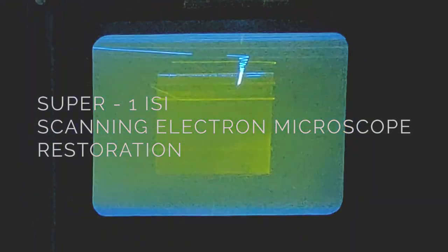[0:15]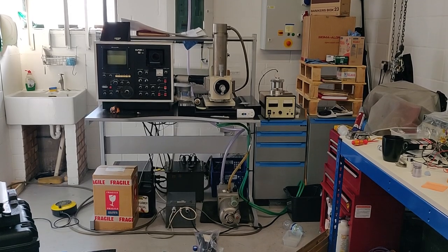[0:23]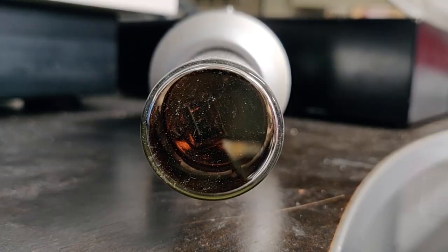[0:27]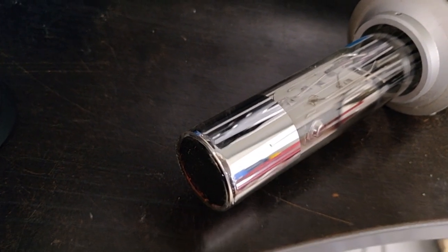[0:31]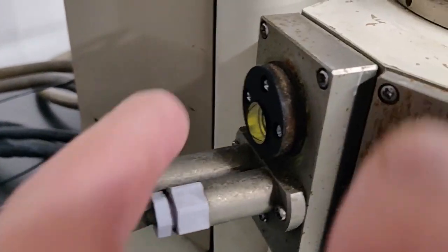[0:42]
I'm just looking at the photomultiplier tube here. This is the photomultiplier tube without the protective aluminium tube around it. This will screw onto the scintillator crystal, which is here, which passes into the vacuum chamber.
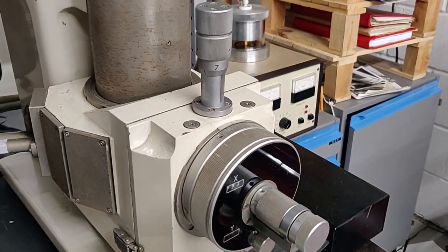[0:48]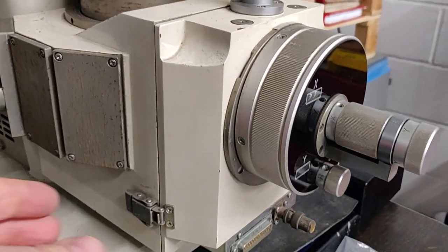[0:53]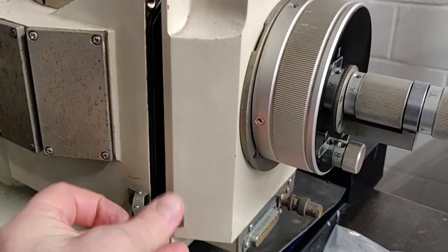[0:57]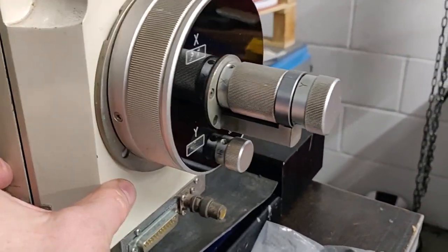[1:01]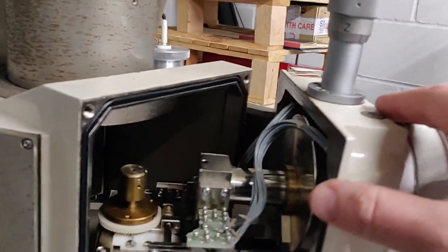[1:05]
So I'm just going to take a quick look at the XY stage while I'm here. I don't want to open this up too many times when I'm still a few days from being able to put it back under vacuum. But having released the vacuum on the chamber, it's quite nice to have a look inside. It's a lovely piece of kit.
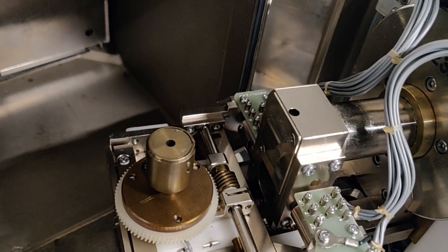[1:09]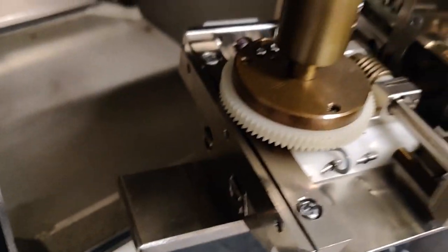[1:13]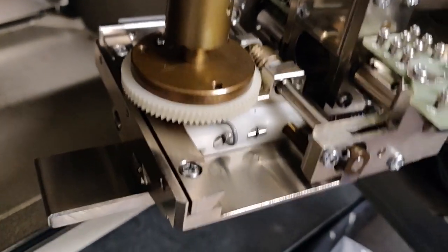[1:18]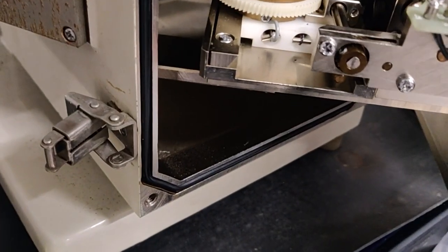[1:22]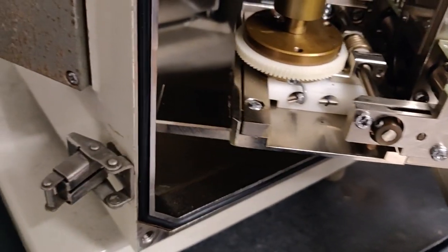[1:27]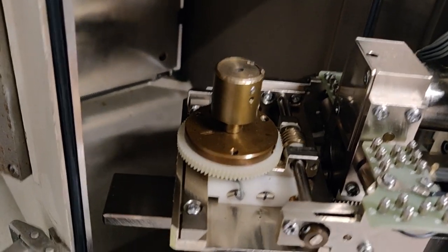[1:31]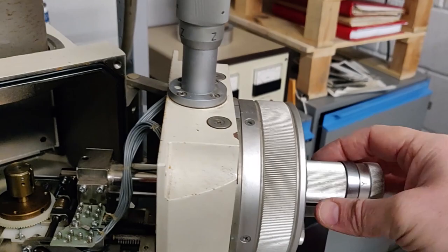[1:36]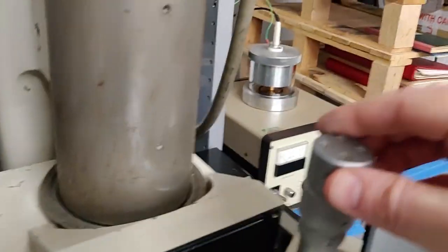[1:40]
So we've got the Y stage here. You can see that it's turning and that's raising the table. That's the X stage, so it should be moving it lengthways along the table. This is tilt. And then that's the Z-axis, the worm gear, I believe. X, tilt, and Z.
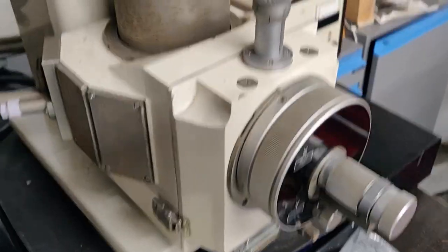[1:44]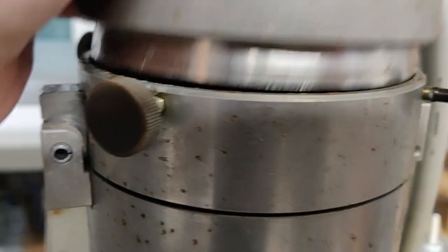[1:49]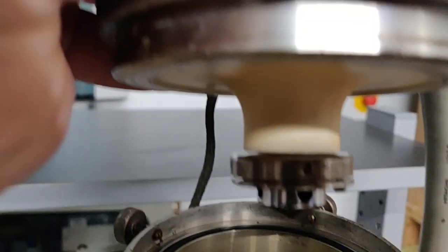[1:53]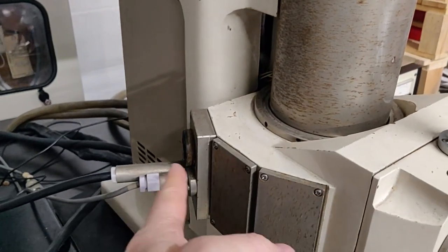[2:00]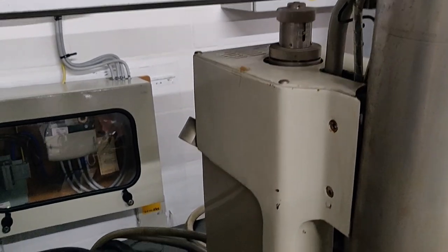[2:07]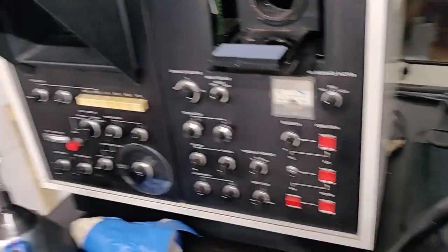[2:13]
And I just want to show the electron gun. So here is the electron gun. That sits in the vacuum, down the barrel, to the sample, scintillator, photomultiplier tube. This is the whole kit for the scanning electron microscope. The rest is just electronics.
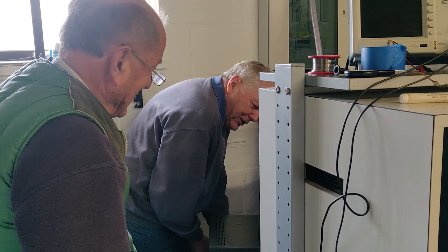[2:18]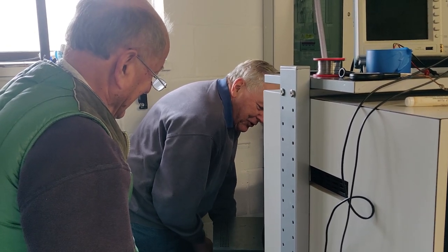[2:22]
There are some characters around it. It runs a Honda S2000 as his other little car. And I think his wife's got a Fiesta or something.
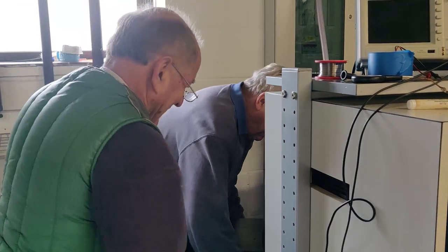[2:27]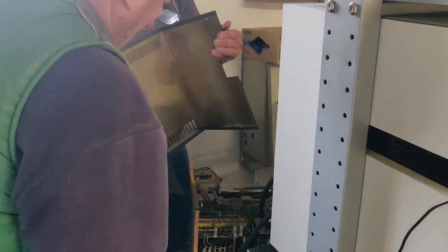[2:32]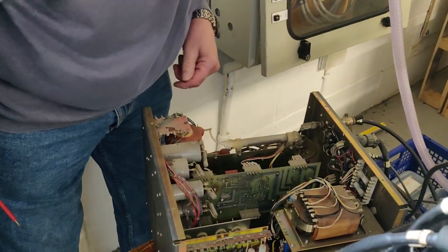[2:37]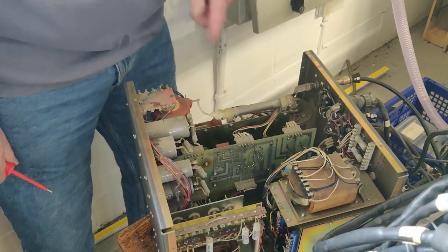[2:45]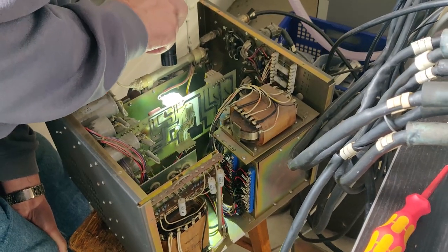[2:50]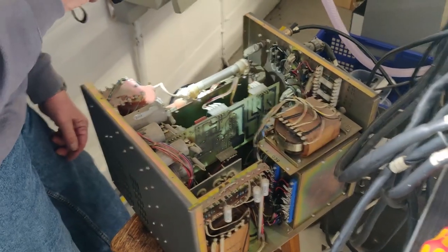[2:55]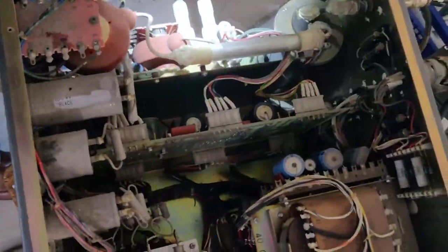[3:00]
Oh, there we go. Oh, look, real engineering now. Oh my goodness, we're really cooking on gas now, chaps. Oh my goodness, look at that board. And I bet it's this board here that we need to get into, because one socket's called J71 and it's got five wires going to it, and that looks as though it could be scintillator supplies, no, I think it's CRT supplies.
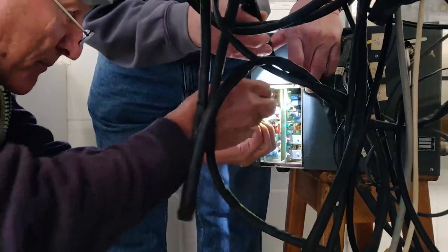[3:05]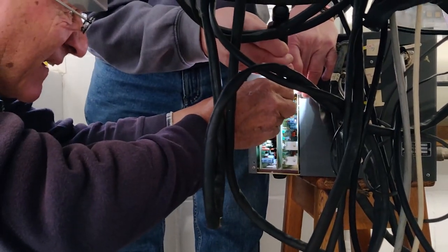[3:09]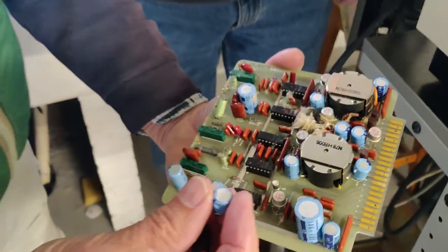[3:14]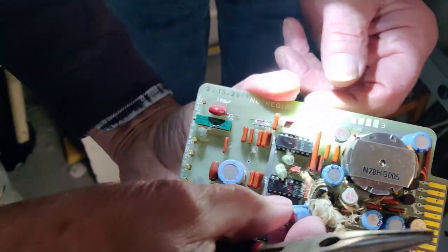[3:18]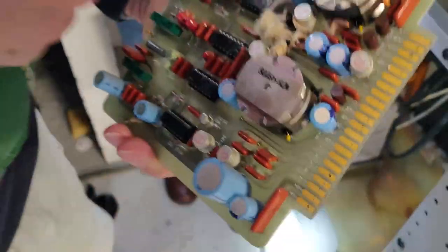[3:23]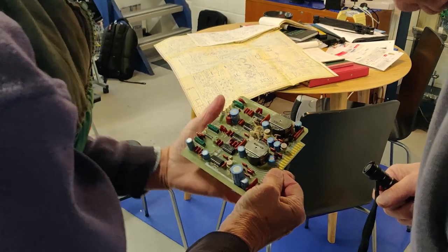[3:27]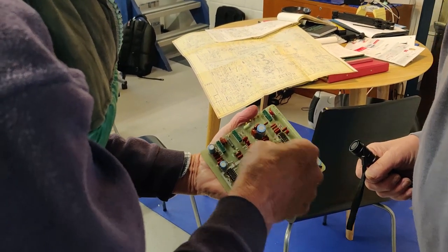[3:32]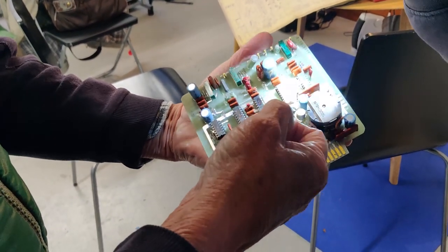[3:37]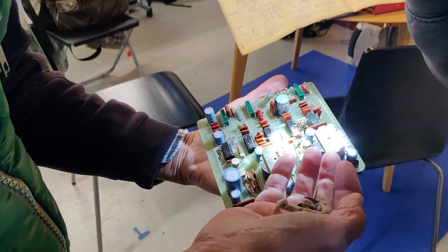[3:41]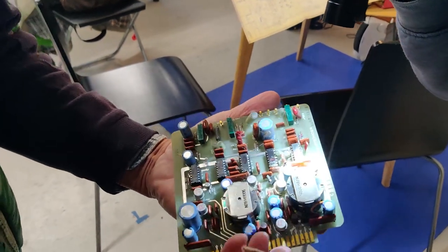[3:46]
Good news. So what's just happened there? This just fell out as I... Yeah, I think it's the top of the capacitor that fell off. Oh, I'll bet. Is this HC8 the one we're on? Yay! Wonderful. Look at that. I wondered if it might be a cap. I've never seen one like this. Is the electrolyte dried then? It's probably depolarised and then just gone short circuit. Yeah, bang. Wow, well, wash your hands before you have a cookie. Pop that in the bin, I guess.
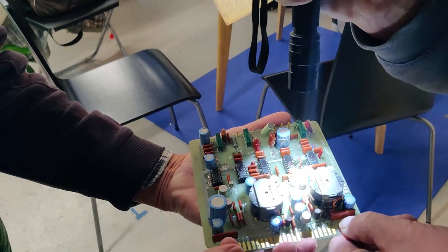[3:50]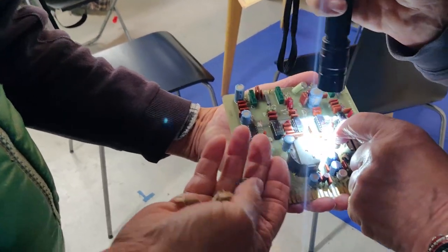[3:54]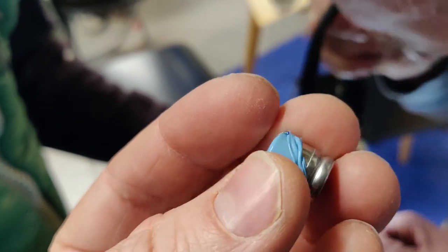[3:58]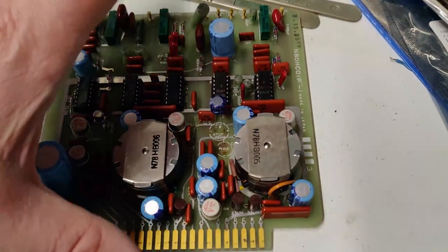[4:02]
Right. I'm just trying to work out, get a circuit ID on it. Well, I've certainly got 100, is it 100 microfarad? What does it say on the side? I think that's just a wire. While you're testing the transistor, I'm going to fit the new capacitors. That's good?
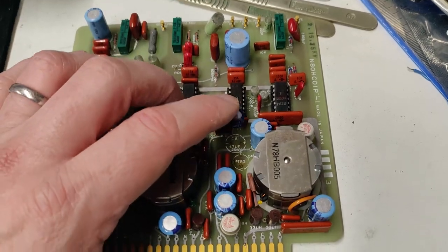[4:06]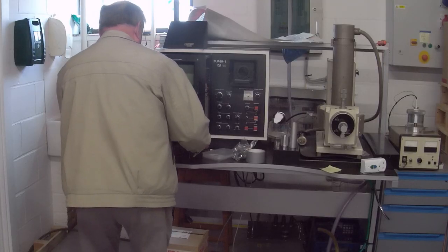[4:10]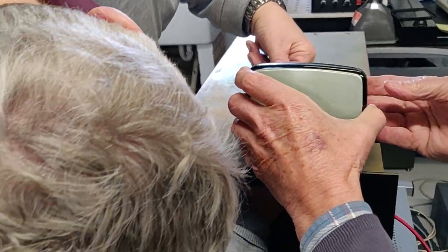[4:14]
At replacing the screen, you see. And this was before we met. Let's take that away so we don't...
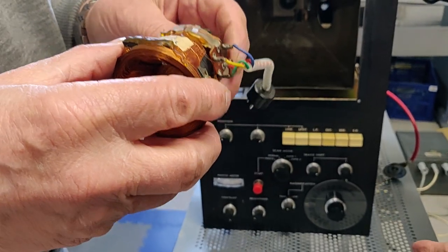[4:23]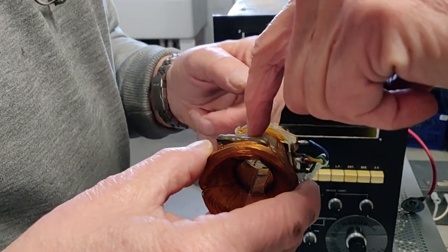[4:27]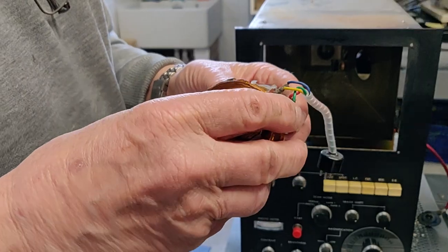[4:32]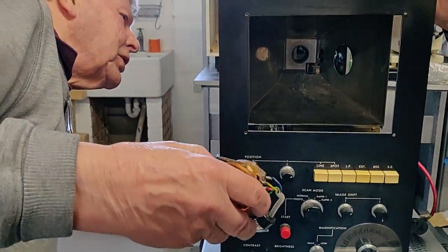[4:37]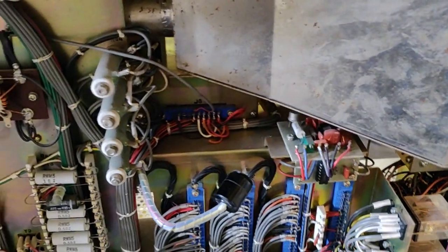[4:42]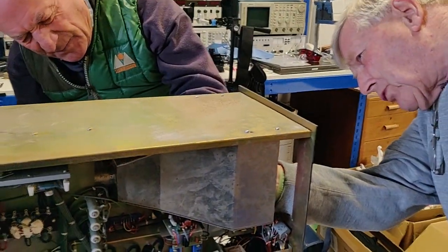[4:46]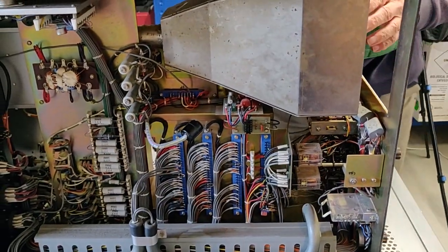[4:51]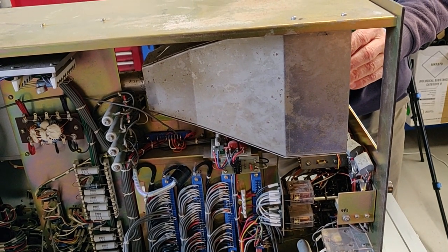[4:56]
Well, I suspect its orientation is like that, actually. I think you're probably right. And if we go... This is the top. Yeah, we'll make that the top, and then we'll see what actually happens. Yeah, if it's a little bit wonky. Well, it might be. Is there an adjusting screw hole for the scan? I think that should have gone through that hole. Through here. Yeah, you're probably right. Once the tube's mounted up, which is fine. Okay, well, that's much better. Now, how do we know where it's got to be on the tube? That's an interesting issue. I wonder what determines where it sits on the tube itself.
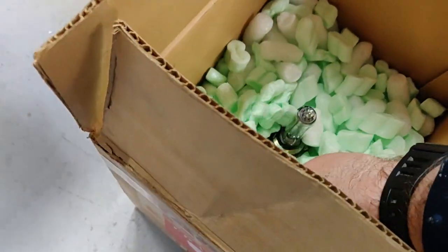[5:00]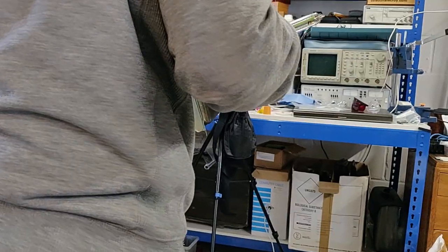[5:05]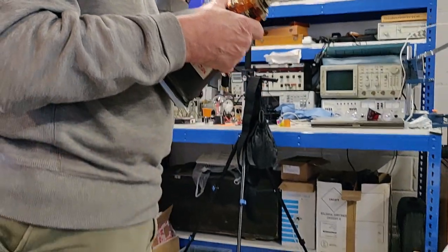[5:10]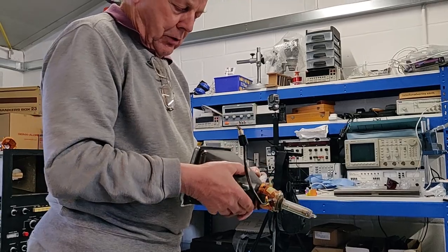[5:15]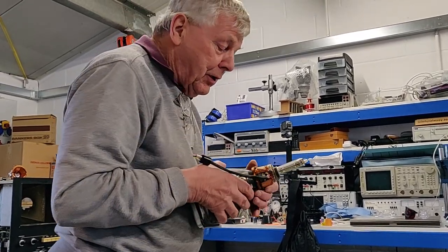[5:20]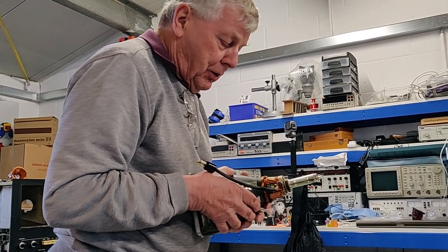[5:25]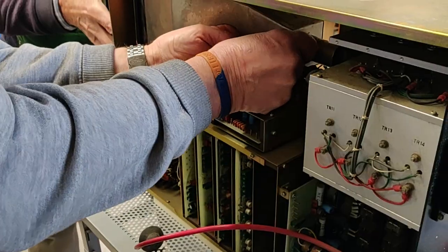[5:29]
Oh, it comes with a... Have you got some scan coils on it? Looks like it. We should change the scan coils over, because they will have been set up for this. Oh, you think? Good thinking. I mean, that's the way it's going to go in, simply because the high voltage connection is on the right-hand side. And I see the screws at the bottom on that one. That's not a problem. Cut those away. All right, good. That's why it's been a bit recalcitrant.
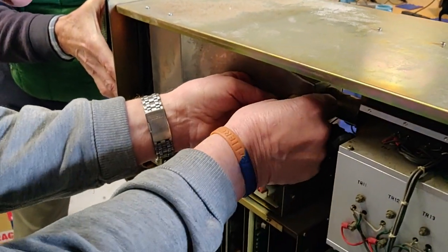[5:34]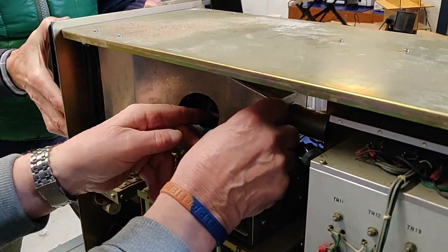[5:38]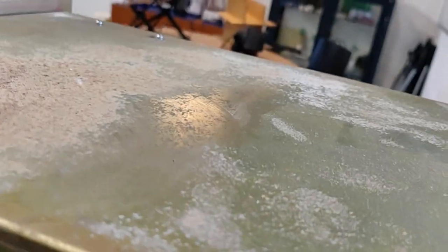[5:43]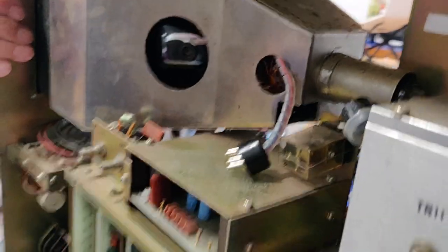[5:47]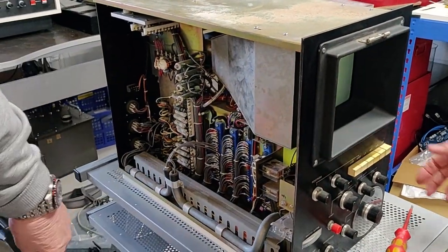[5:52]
Okay, mate, off you come. Get going. Something is stopping me. Okay, I'm up. I'm flush. Yep, goody goody. We're done. Oh, it's so much better. Where are the screws for this? That'll be in the next. Let's put that on the table.
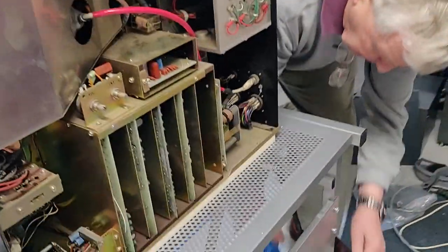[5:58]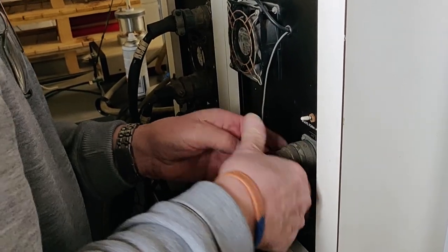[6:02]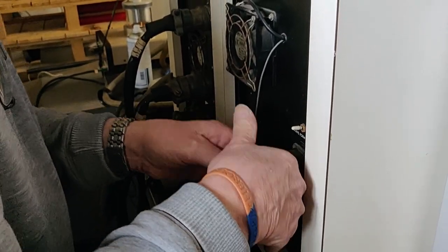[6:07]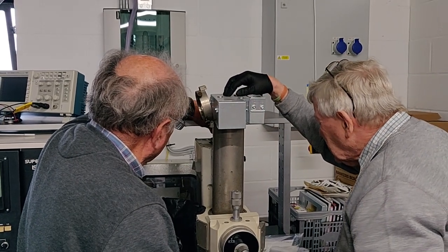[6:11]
Right, okay. Now I'll take the photomultiplier tube. Oh, goodness, yes. Hole. If I can stay on the... Because I'm measuring near enough and short. Yeah, that's good enough. Should do the pump. Yep, there she goes.
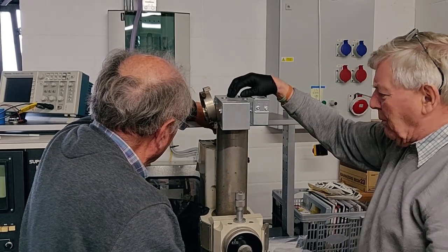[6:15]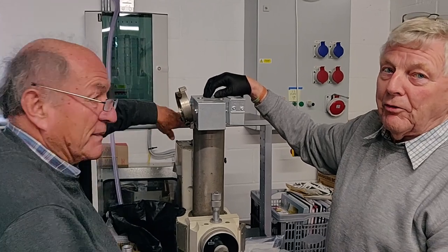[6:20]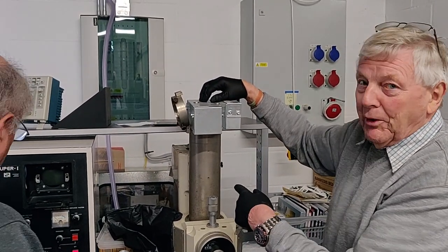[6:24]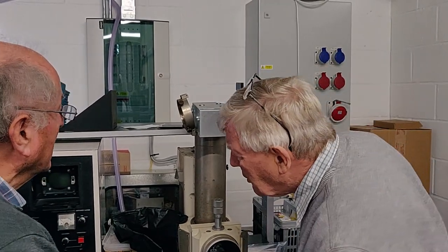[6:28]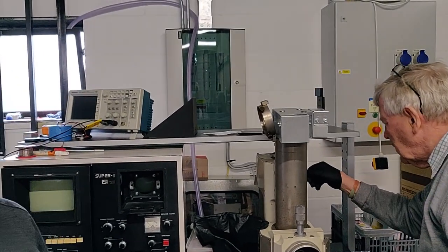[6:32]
So what are we actually doing exactly? What I'm doing now, we're getting the column under the condition that it thinks it's got a good vacuum in it, so I can get the EHTs on. Because we can't get the EHTs on without there being good vacuum in here, as part of the safety issues. And EHT is? Extra high voltage. KVs.
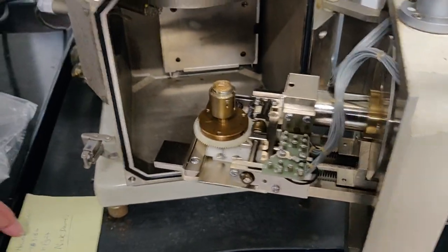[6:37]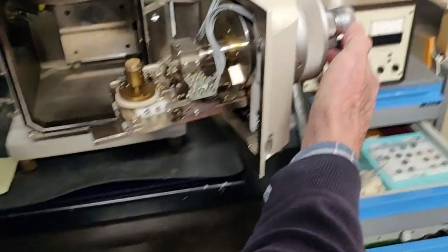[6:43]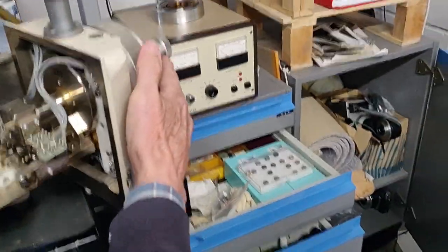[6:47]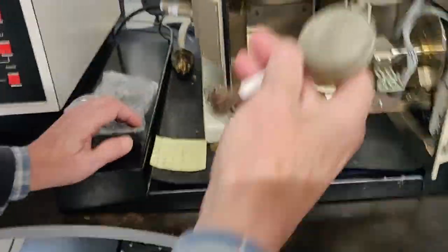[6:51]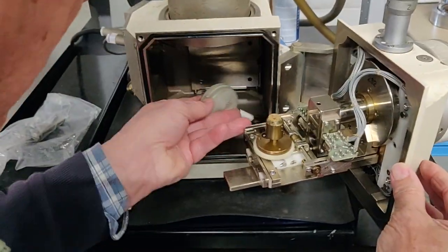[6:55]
That's beautiful. I see something here. Oh no, do we need to... Well, there's something in that corner there. I have some brushes that might be good for cleaning things out. Where's the optic brush? There we go. That's a little blowy brush. Maybe we can use that for cleaning out. I don't know what that is. Oh yeah, it is something.
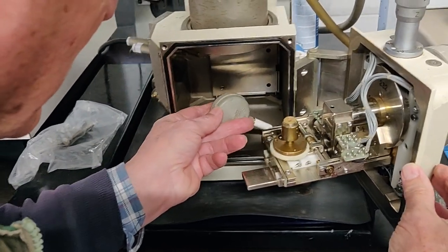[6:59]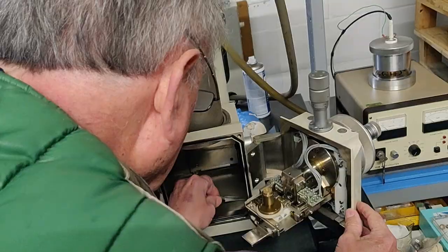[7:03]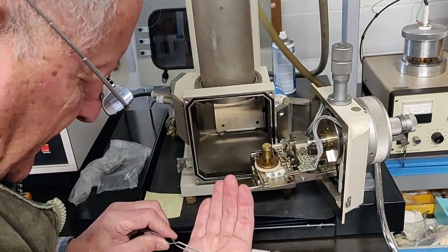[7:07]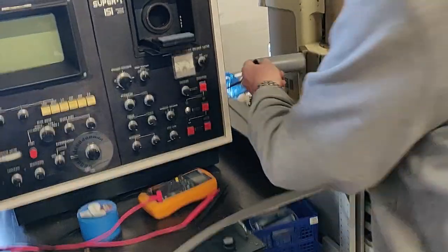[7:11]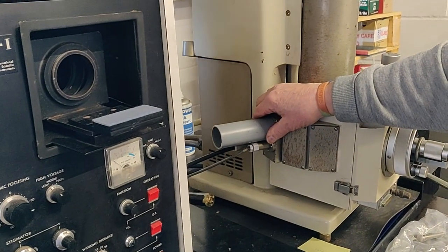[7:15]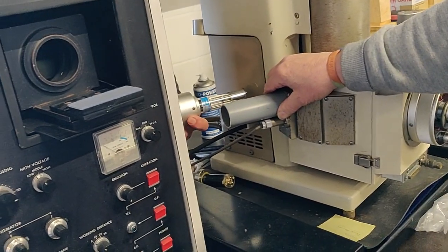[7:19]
Okay, do you want to... I need a... Do you want tweezers? There we go. What is it? Just a piece of crud, I think. We can either take that onto there and then... Actually, there's not enough length to get that in through the gap, so we're going to have to put it on there first. Okay. I think.
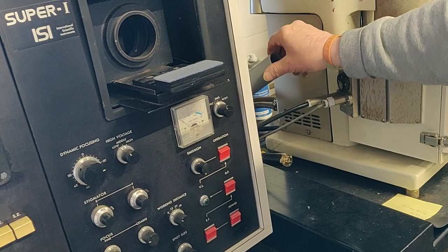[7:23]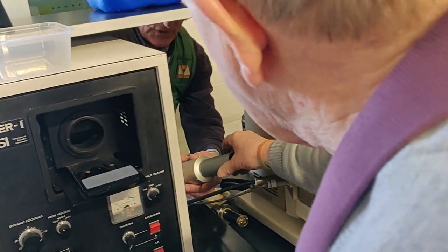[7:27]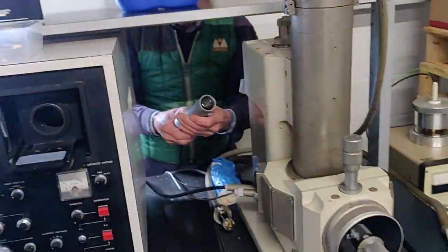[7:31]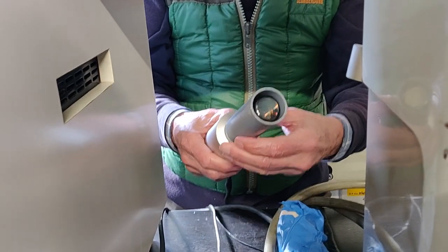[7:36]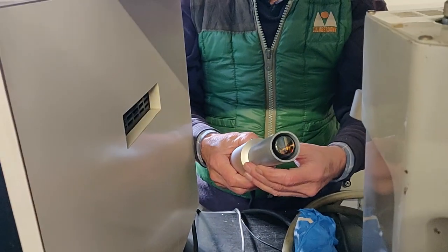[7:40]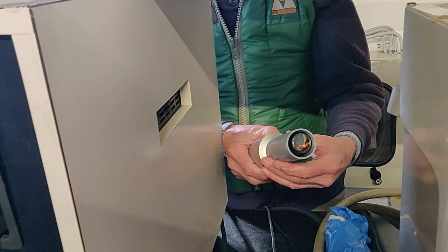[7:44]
And if we try and tie... I know it's not lined up, but we can make enough tape there to make it a fairly substantial connection. Could you just show me that? Well, that's interesting. I think that'll be all right. Well, if that's not perfectly aligned, it doesn't matter. In fact, it doesn't matter.
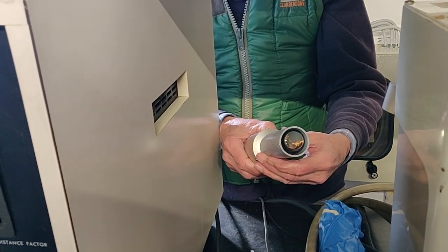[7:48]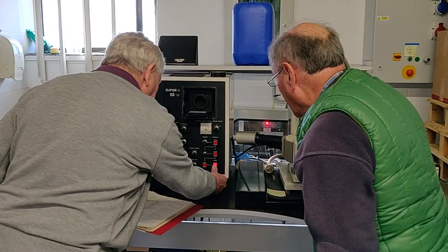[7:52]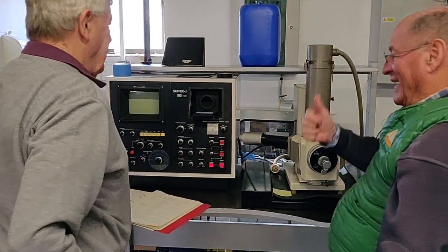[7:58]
A wide clamp would clamp that, wouldn't it? Oh, like a Jubilee clamp. A Jubilee clamp. Well, we've got power there. Power there. Right. Okay. Oh! Yay! Right.
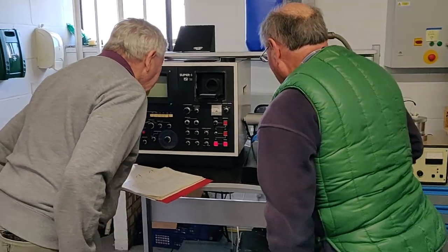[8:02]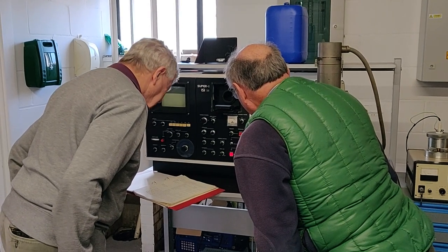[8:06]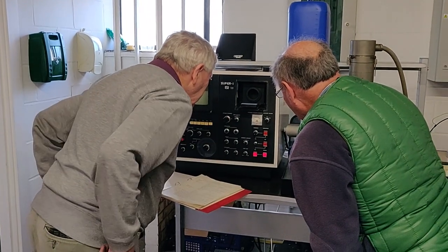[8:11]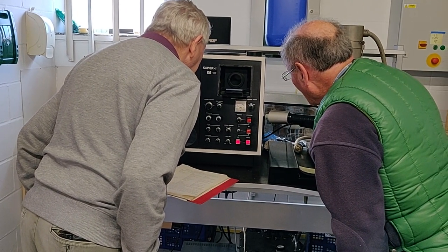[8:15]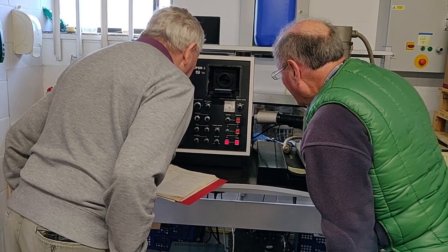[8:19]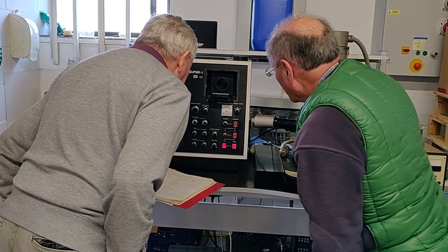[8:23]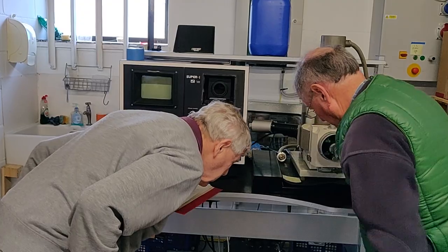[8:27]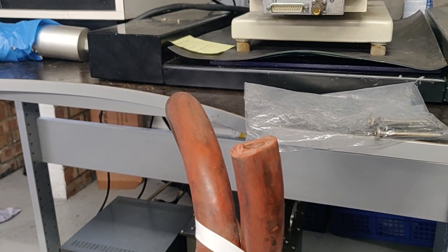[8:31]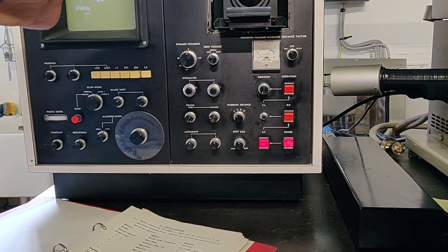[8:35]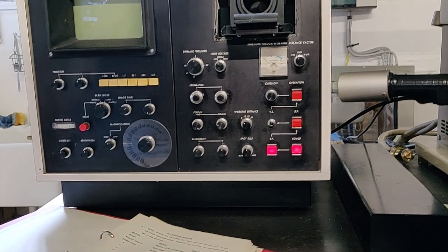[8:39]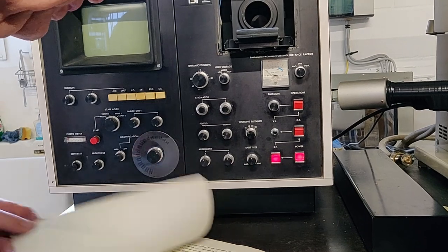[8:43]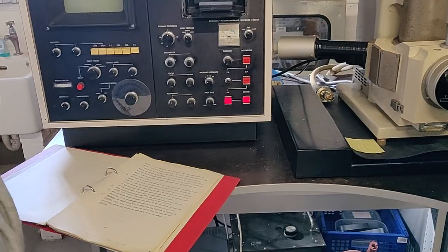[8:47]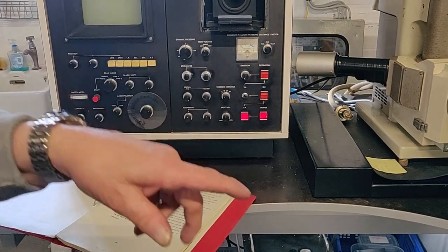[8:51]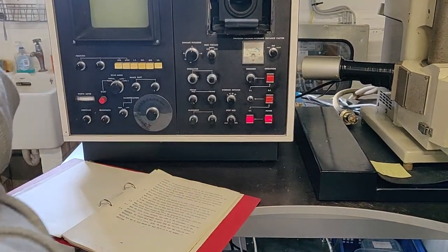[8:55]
Vacuum tube. Diffusion pump's not on, so that's so far. See when that starts leading to something. It may take a while. Do we want to get cooling on this then? No, not at the moment. What are we expecting? The emission vacuum? I'd expect this gauge to start dropping in a minute. At the moment we're pretending that the diffusion pump's turned on, but it's not actually turned on, so I'm now trying to rough out the whole column through the rotary pump.
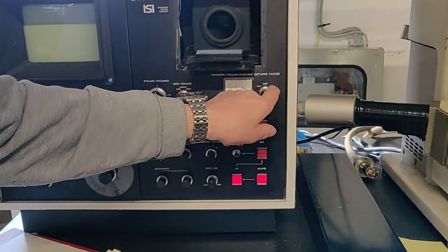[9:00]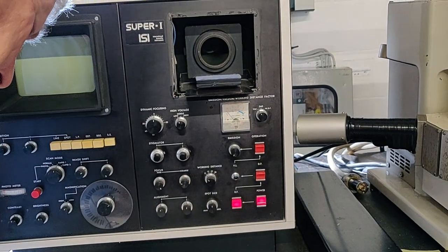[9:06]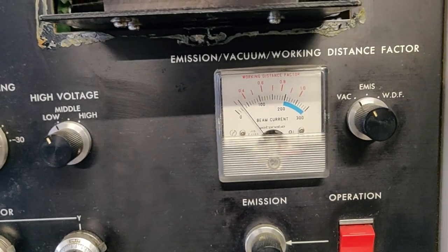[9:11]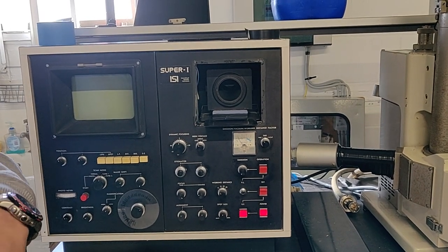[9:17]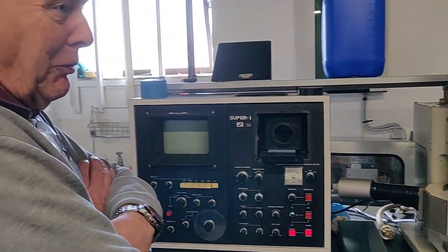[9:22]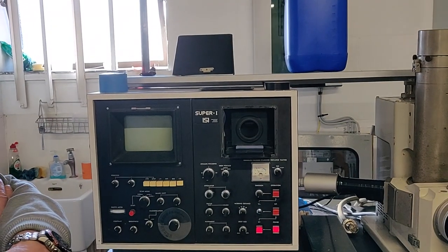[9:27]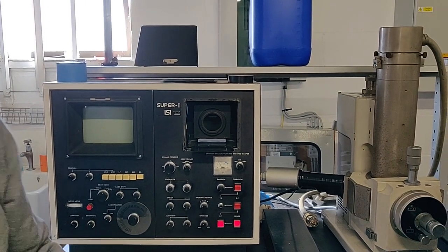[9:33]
Okay. Working distance, dynamic working distance focus. It should get to 100, you see. It says, when vacuum level reaches 8 to 100 on the emission vacuum meter, turn the vacuum valve to the 3 position. I think we're just pulling out crap from all the pipes at the moment. Moisture, water, God knows what else there is in there. It might require an hour like this to clean itself up. Well, we might have coffee then. Yeah, time for coffee. Let it sort of fizzle away to itself.
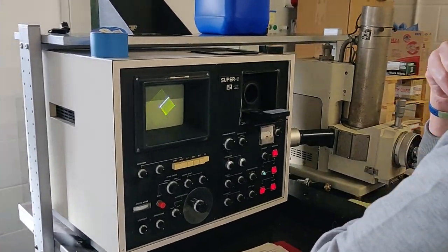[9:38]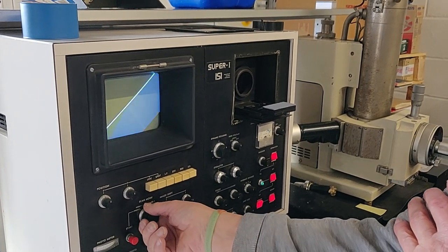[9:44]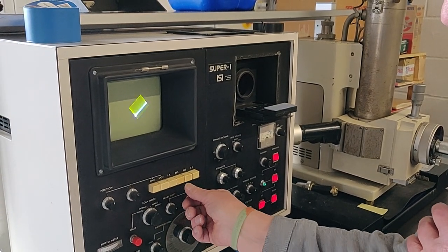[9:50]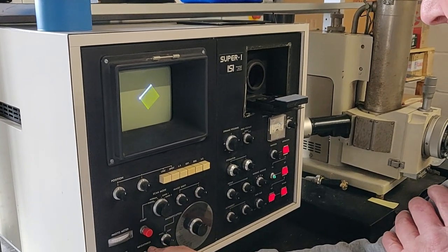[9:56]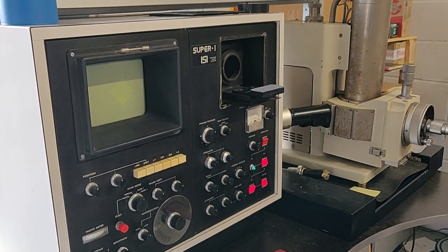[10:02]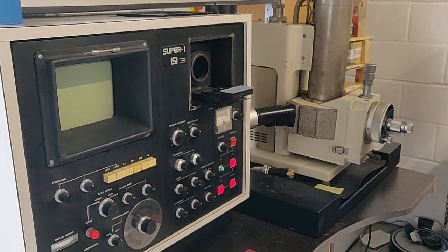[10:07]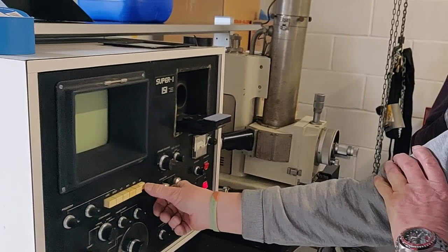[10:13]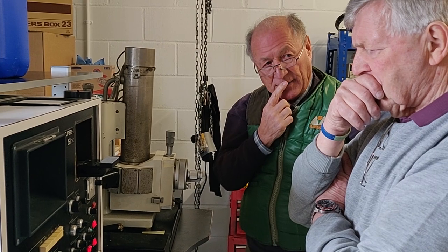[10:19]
Could you just explain what just happened? Oh! Well, we don't know why it's gone for a small scan. It's very strange. It's awfully bright as well. The brightness is right down. Yeah, I have turned the brightness right down. It's too bright. Could that potentially damage the phosphor eventually? Well, if it's scanning, it won't, but if it goes off it... So okay, it sits on that. Why did it suddenly go small? I don't understand that. So perhaps what we've done is we've lost half of the scan that was there.
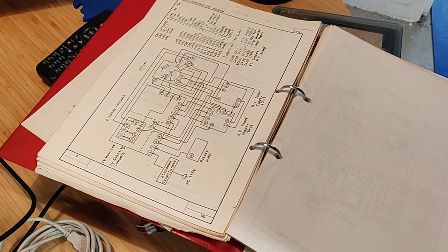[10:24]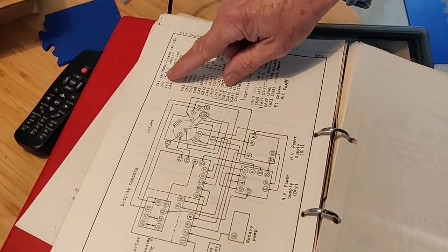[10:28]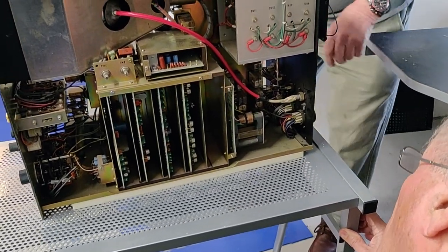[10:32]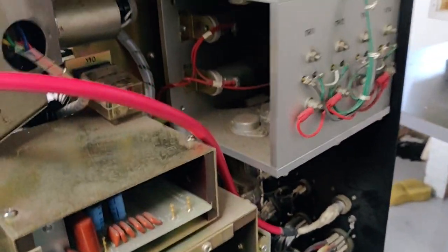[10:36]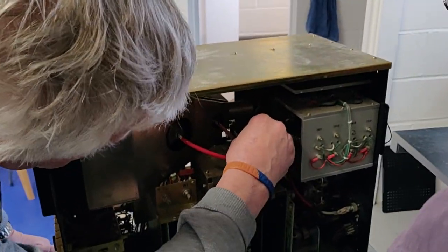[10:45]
One. Oh, I see. They're different numbers. Oh, here they are. Look at that. Right, Bernie, that's all clear. You see one, labels. Yes. Y1, Y3. Oh, that's good. I think they are... That relay doesn't look very healthy, does it? It's the case is off it. This one here. Am I right? No, it's clipped. Okay, I don't think you can...
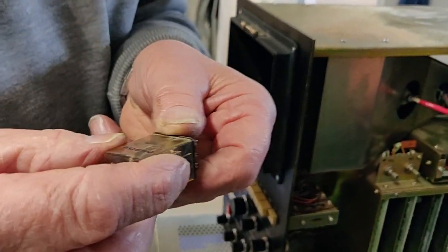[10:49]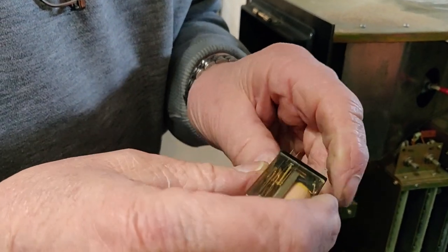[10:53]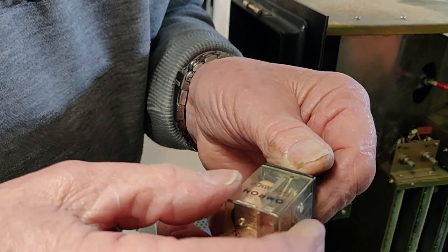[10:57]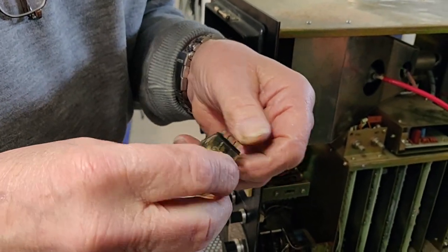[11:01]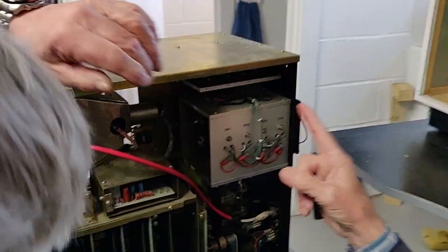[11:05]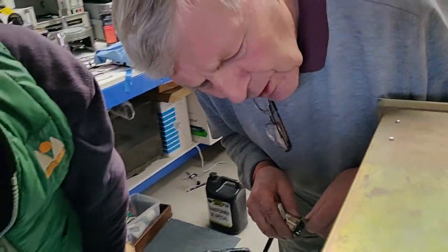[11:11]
Y10. What just fell down the back there? No, it's just a clip for it. Ah, okay. I just want Omron relays. They're quite good relays. Omron MH2P. So that's, again, something I can replace. Now, here's some drive transistors here. Yeah, and there's some more up there. But, you know, taking them in and out usually will clean them up to a level that...
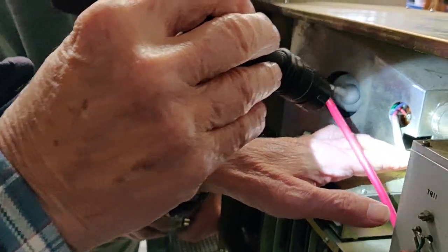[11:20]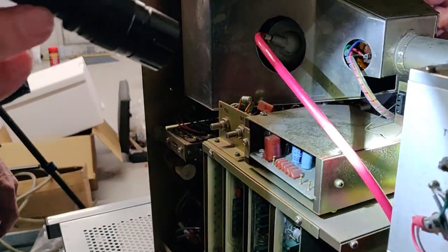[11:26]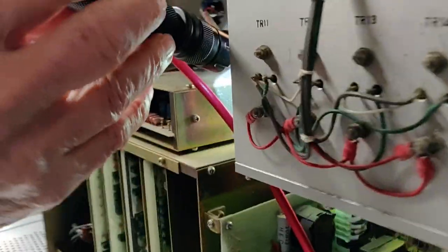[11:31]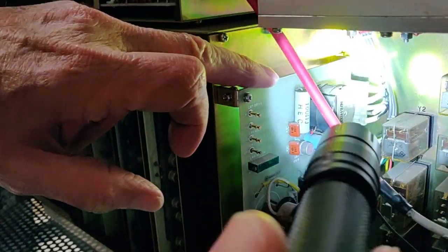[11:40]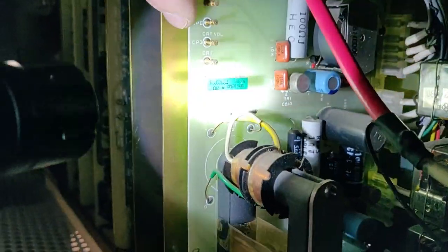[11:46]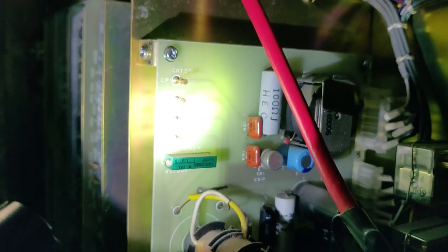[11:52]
Now, where does the CRT drive coil, which you cable up, where does it actually go to? It goes on to this black wire and then comes back through where my finger is. Coming through. This set here? Yeah. So that goes down to this board. I'm pulling the end of it now. Oh, I hate to point this out, but CRT drive board, and then there's CPI, CPE, CPE. Yeah, but it's a scan. CRT drive, yeah. See, this will be a high voltage element to it.
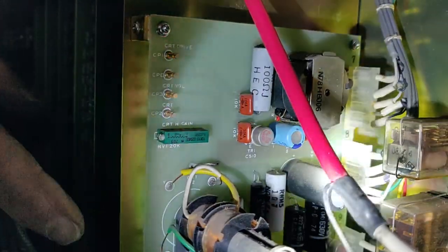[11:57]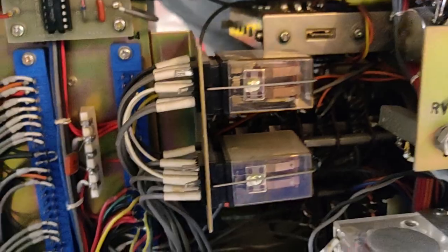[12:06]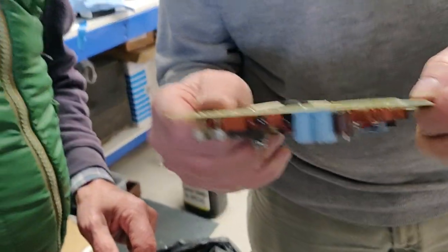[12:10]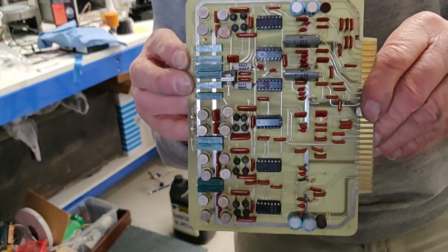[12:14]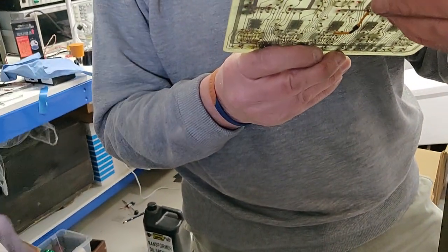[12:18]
Okay, that's a high voltage transformer, is it? No, well, perhaps it is not. Just thinking about it, it looks more like a TV type transformer. Could you show it to the camera? Do you have a clue what this does? It's a scan board. Which one is it? We don't know. Does it look good? Yeah, it looks really nice.
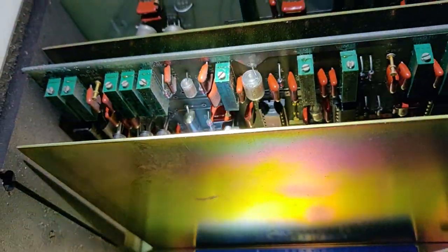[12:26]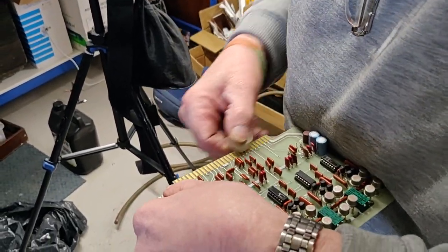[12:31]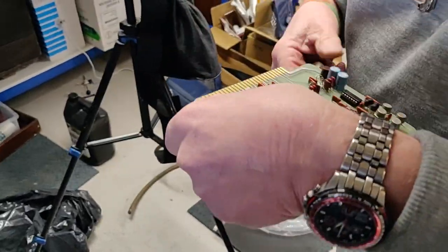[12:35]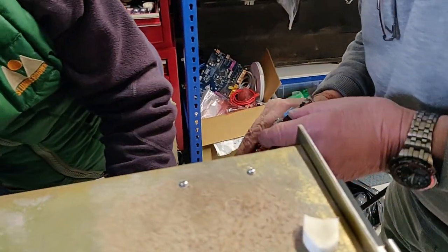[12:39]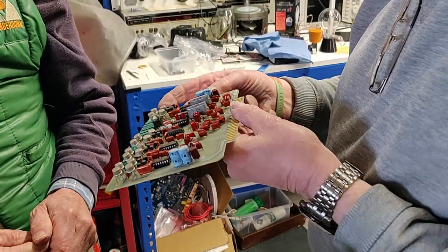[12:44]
Just a way of cleaning the sort of gold contacts. I have flux cleaner as well, if you... No, that's a bit fine, actually. It tends to be something more aggressive. Right, okay. He can go back in again, Bernie. So these are basically the scan. This is the scan generator board.
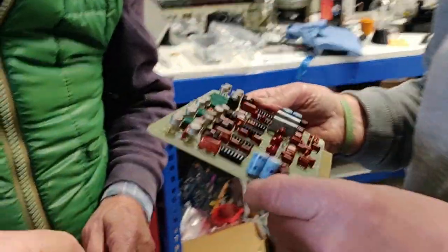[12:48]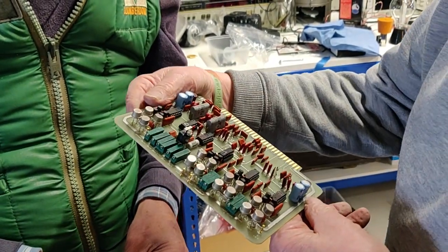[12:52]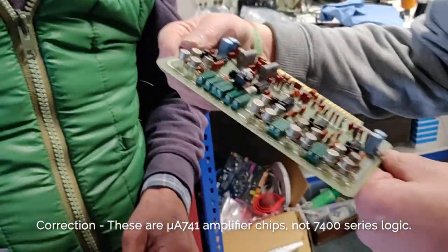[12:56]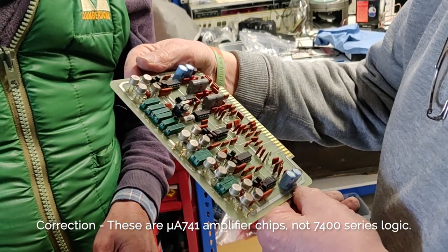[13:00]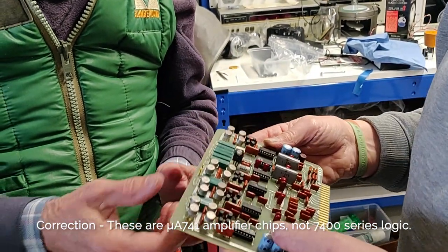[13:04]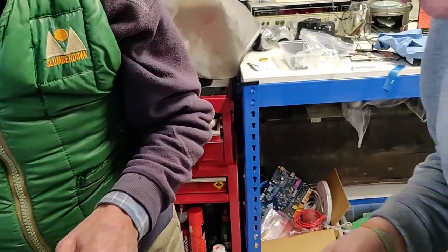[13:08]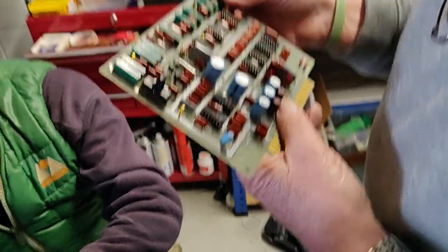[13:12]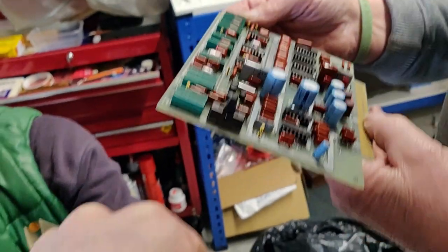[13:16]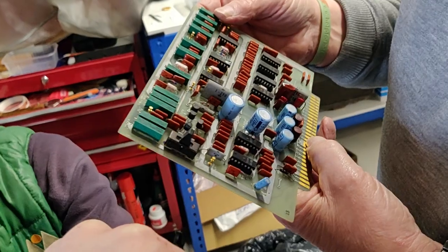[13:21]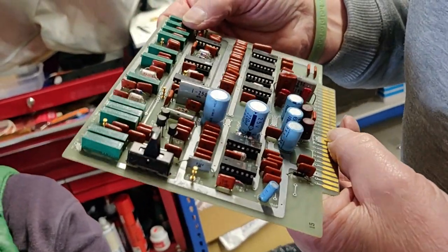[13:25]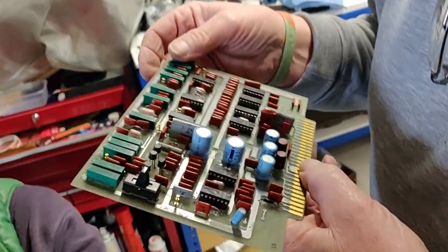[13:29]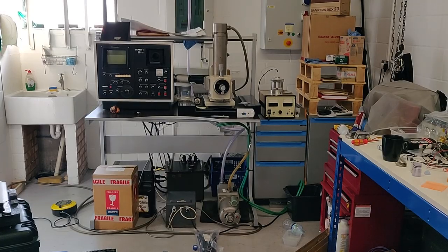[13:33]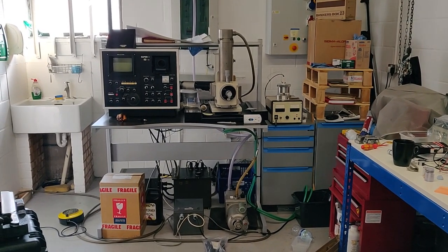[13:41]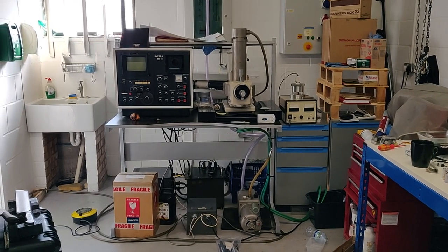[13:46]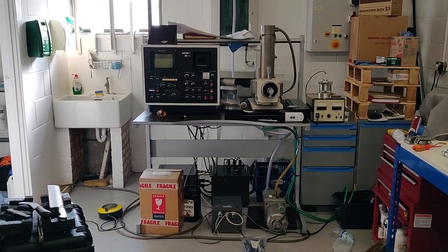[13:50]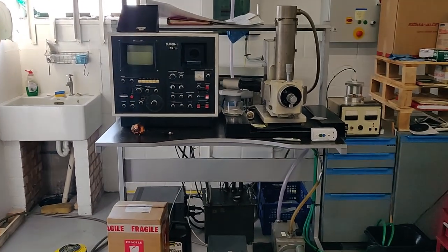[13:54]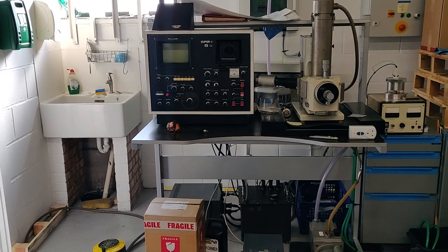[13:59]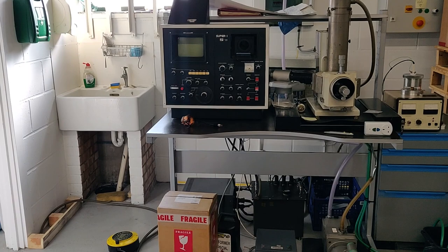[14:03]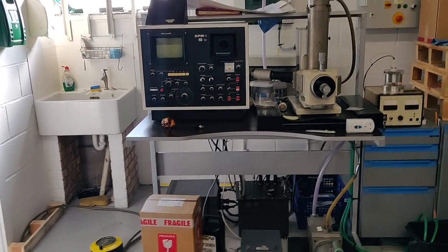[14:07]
Hi, this is Andrew White. I'm recording some of the progress I've made today on the scanning electron microscope. Since Dick and Bernie came and helped me and we turned the unit on for the first time in 6 years, we'd established that some of the things I needed to do were to look into the circulation pump and find a photomultiplier tube housing and replace some of the old pipes, tubes, housing that wasn't looking very good.
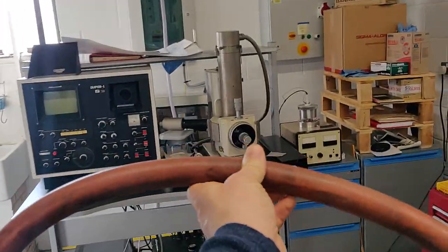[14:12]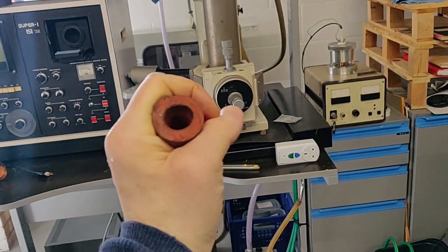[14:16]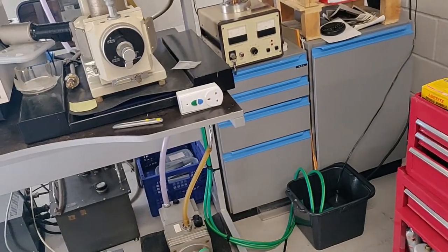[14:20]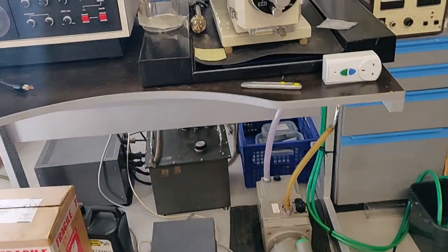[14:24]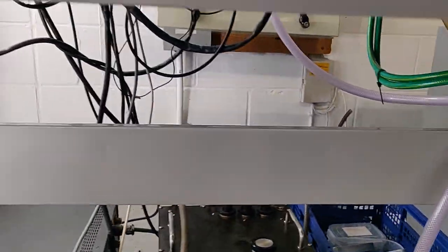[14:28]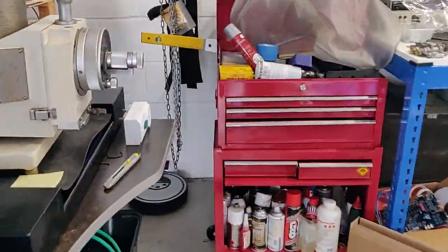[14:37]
Progress on me today. This was the old outlet from the vacuum pump. It's a thick-walled rubber tube, but it ended pretty quickly, which meant that the oil vapor mist was coming out into the room. I've replaced this with brand new hose that goes out to the window, so we can now pop that out of the window and not worry too much about giving ourselves bad things.
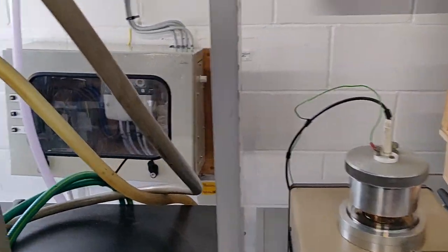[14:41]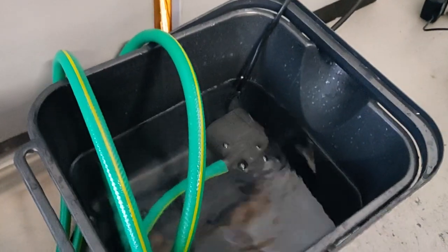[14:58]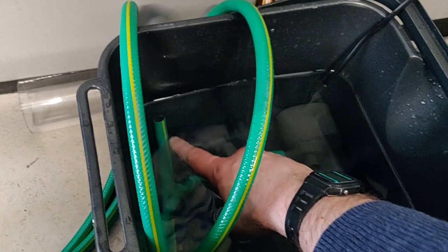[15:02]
The other thing I've replaced is the hose. This is with garden hose, but it goes on perfectly for the back of this unit to create a circulating water chiller pump. And there's an aquarium pump pushing the water around to cool the diffusion pump down.
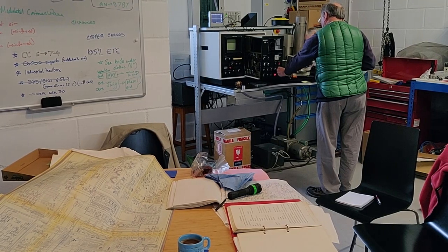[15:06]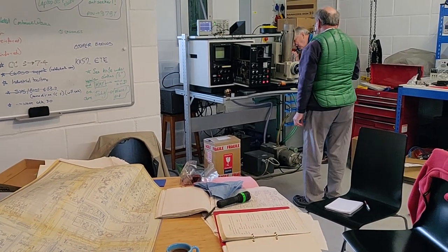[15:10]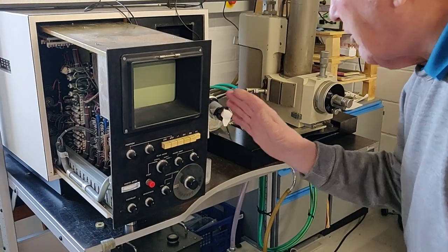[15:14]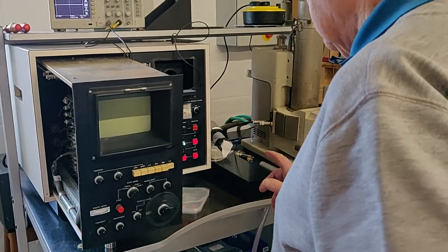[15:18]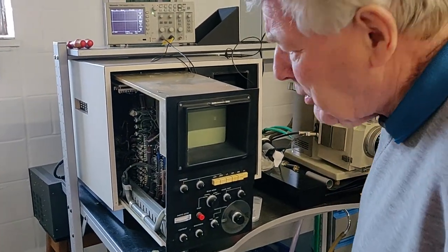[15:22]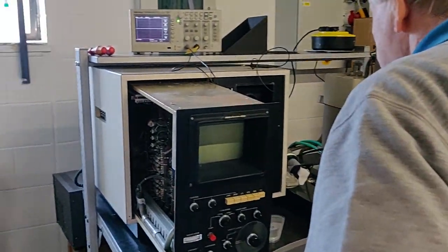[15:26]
And we should now get a scan, I think. So, that same one that we had before? Yeah. Okay. So I think we've got to turn... But have we got our DVM hooked up? Not yet. We've only got the scope hooked. Do you want to do that?
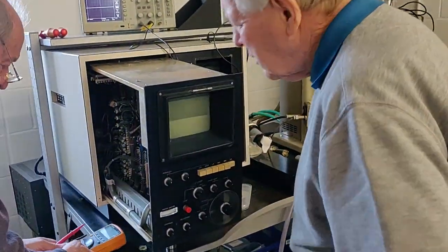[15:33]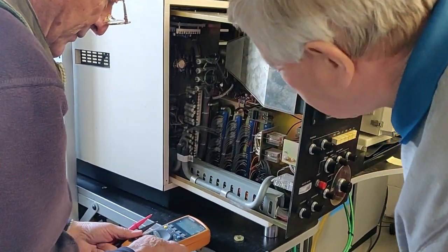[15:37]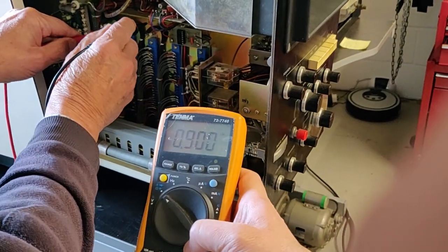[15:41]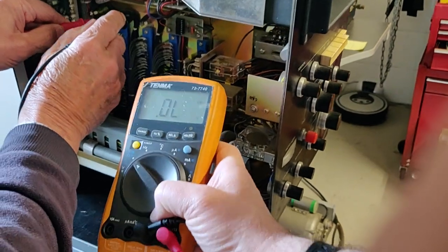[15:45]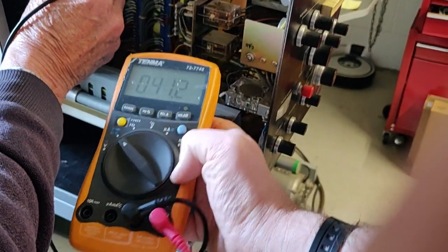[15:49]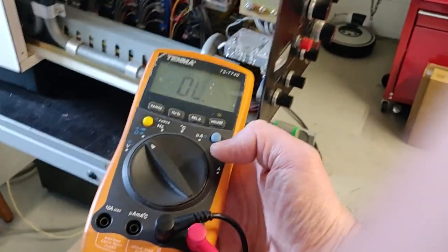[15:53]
All the common black wires? Yeah, I think they are. I think that's probably a sensible place to go in. They look like a couple of probes here. Oh, they're not. Just try point to point. Try one of the columns to another. There we go. Now try the case. There, yes. Sorry, those are earth points. I switched it to diode. What did you want to do?
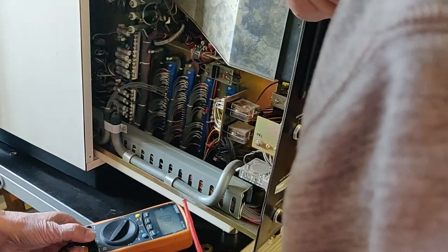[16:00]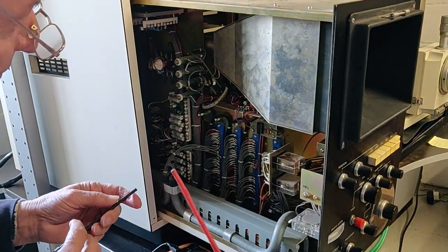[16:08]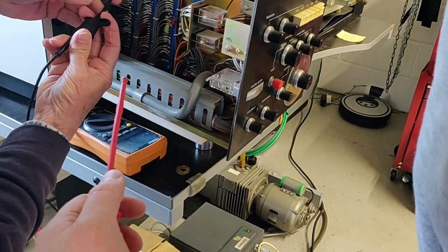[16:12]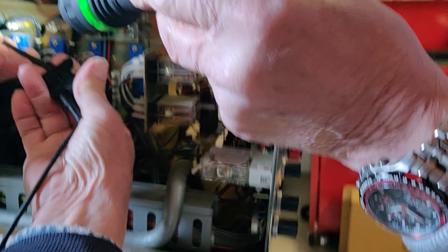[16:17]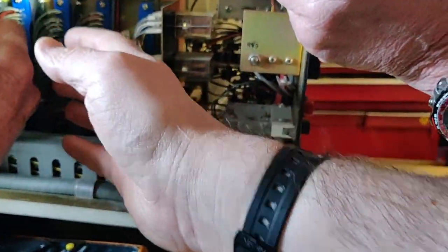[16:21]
So put the black one in the common. Yeah, and the other one into the HV. There we go. Right, so we can see the meter. And then this is your hot one. So you put it onto a ground. Put that on the ground. Can I catch it right there? That's fine. Have a look.
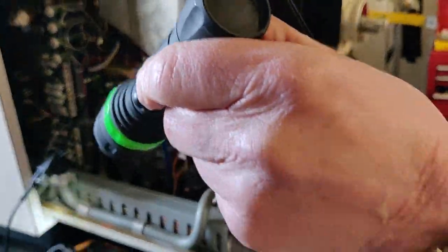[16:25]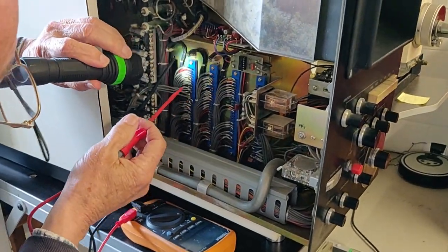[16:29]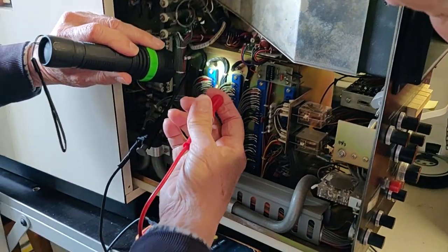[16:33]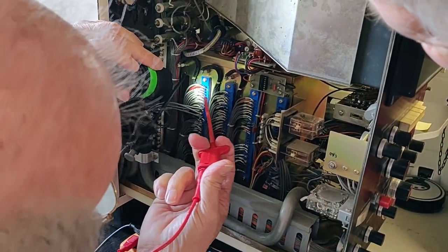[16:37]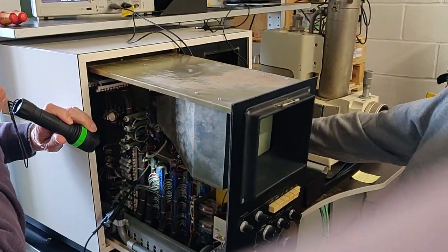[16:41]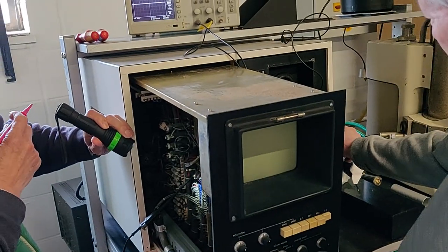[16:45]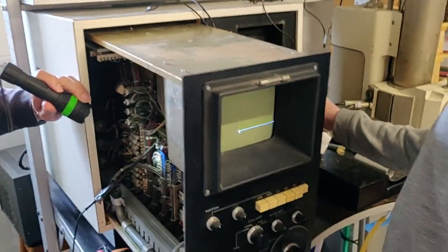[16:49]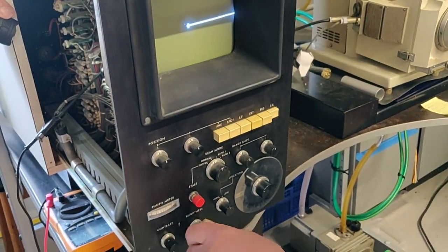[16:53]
Okay, that one. You want a torch? Yes, thank you. Which board is it we're playing with? That's J1. And you're looking at A, B, and... You're looking at pin one. Ready to go? Ready to go. Oh, we've got a line. Definitely got a line. Yeah, got half a line. Now turn the brightness right down.
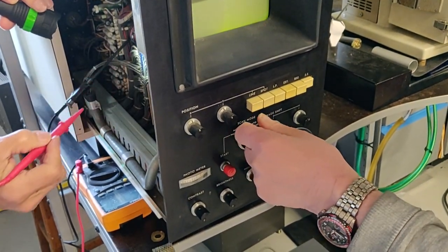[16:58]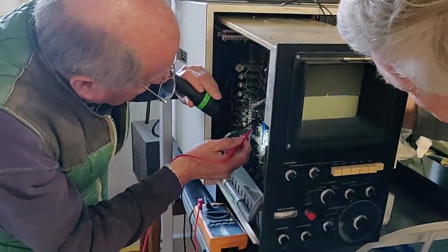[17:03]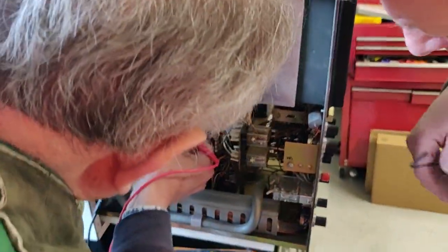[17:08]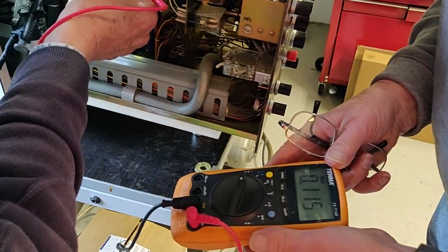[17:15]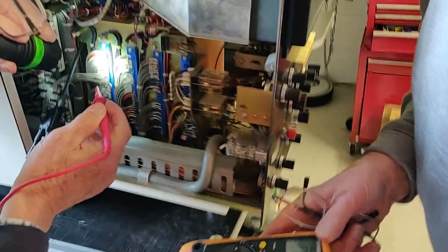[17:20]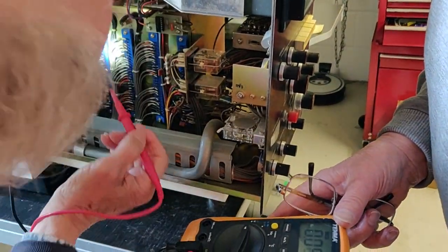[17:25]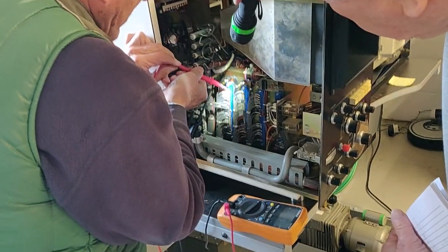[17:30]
Yeah, fair enough. Scan mode, can we... Why can't I turn the line down? Spot. So this first one, yeah. There's the meter. So pin one. Sorry, I'll press the button. Is 0.1 volts. Right. That doesn't make sense. Well, it does if the power supply is broken. Right. What next point? Good torch. I'm trying to get in, but I don't touch it.
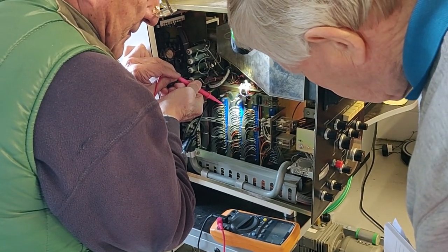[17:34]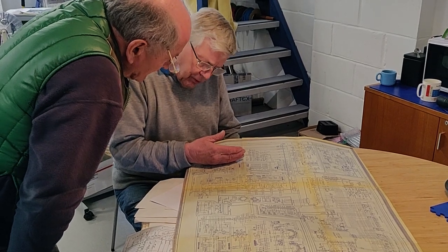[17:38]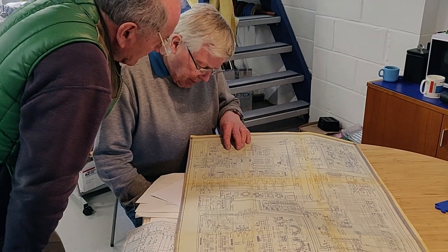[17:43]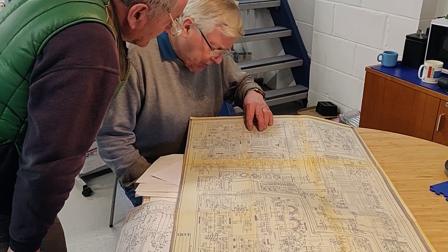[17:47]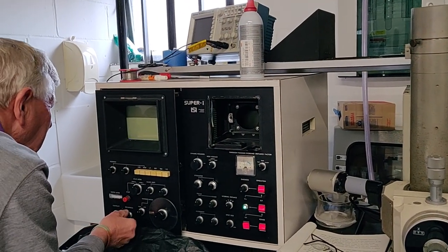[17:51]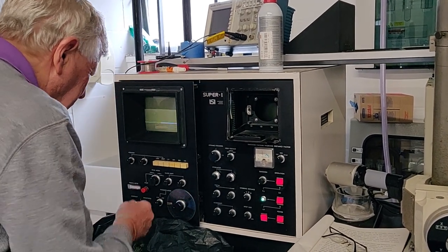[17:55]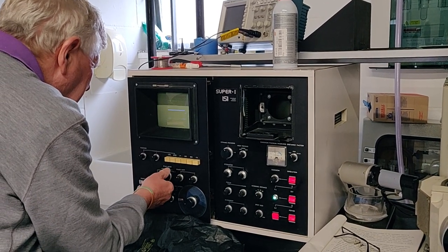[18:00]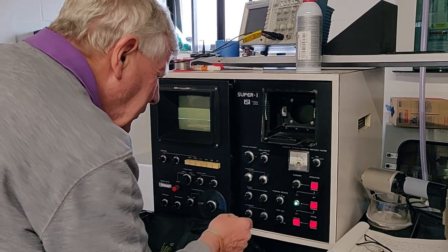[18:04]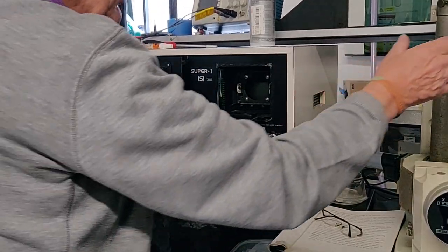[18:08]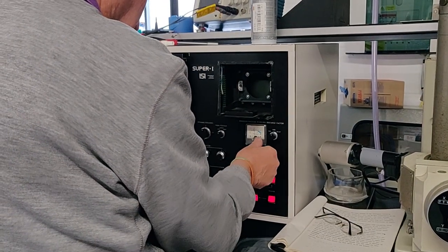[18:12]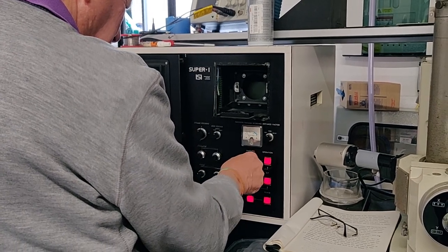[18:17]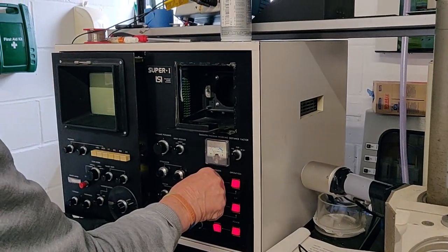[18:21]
Okay, that's scanning, isn't it? Yeah. Operate. So we know that's coming on because some of the bits are coming on anyway. It then feeds that transformer primary and it feeds that transformer primary. But we're getting noise on the CRT, and no, we're not getting noise anymore. Well, I think it is there. I'm assuming, but what worries me a little bit is why we have. Oh, I've got a bit of dirty pot there, I'm sorry. Now I've dropped to zero.
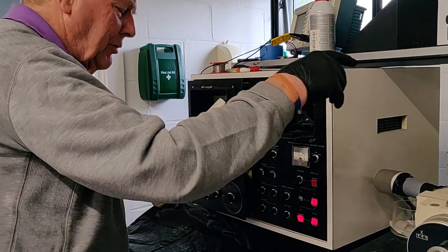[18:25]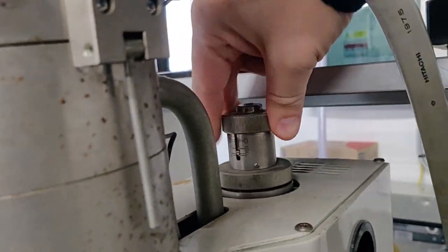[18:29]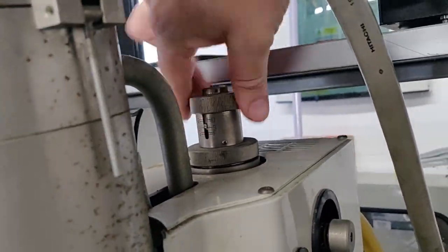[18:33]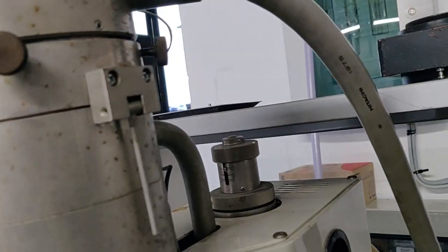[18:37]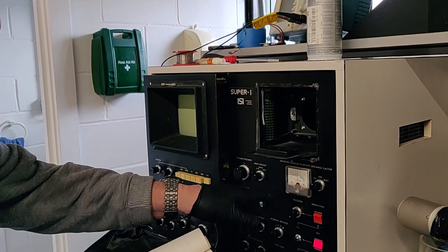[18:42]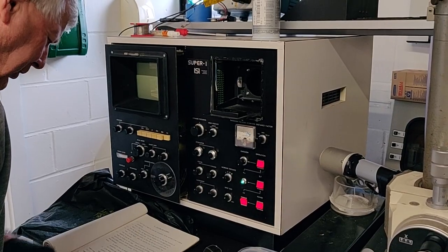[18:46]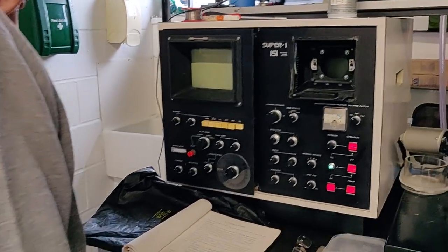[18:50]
Right, I think we could go to three now, please, on the knob up there. So we go through one to get to three. That makes a lot of sense, actually. So one is just ticking away to itself. Well, we'll wait till it comes over into the green, because the light won't come on until it's... Oh, of course. Adjust the brightness control so it's a comfortable level. Whatever comfortable is. It's not scanning. No, not yet.
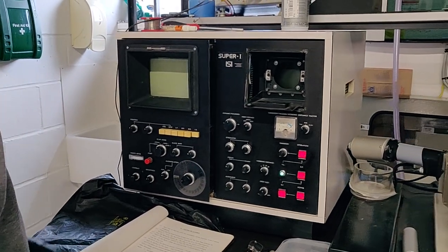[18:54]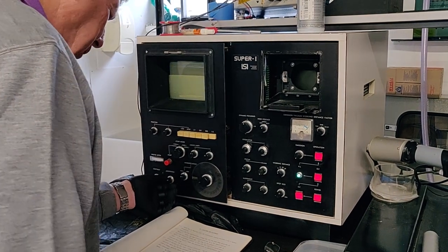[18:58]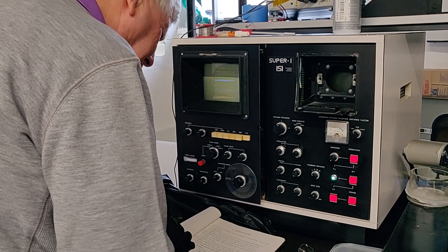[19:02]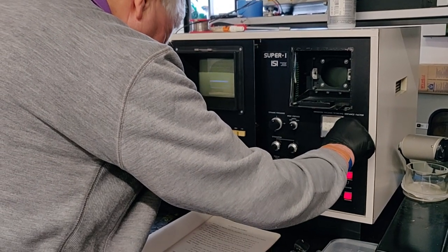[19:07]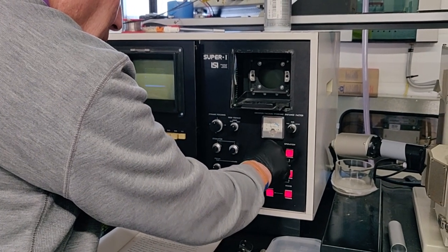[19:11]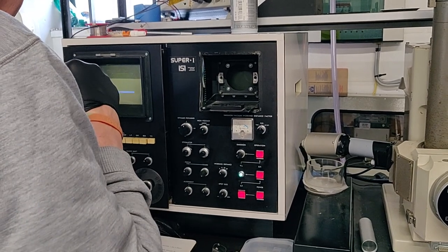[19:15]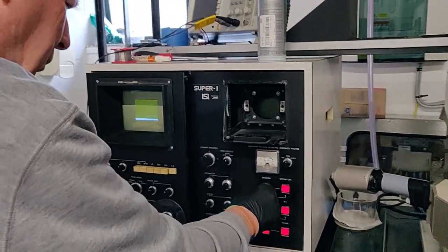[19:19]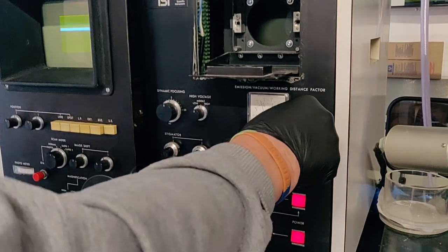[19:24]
So it says go to rapid one or rapid two. Let's go to rapid one. Carefully turn the emission control clockwise. The emission meter. Let's put it. Oh, well, that's interesting. Is that it detecting something? I'm going to burn it out.
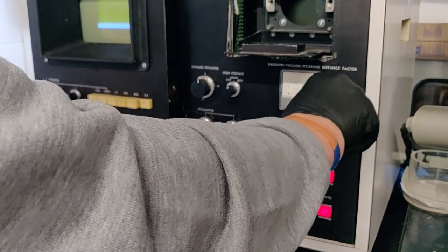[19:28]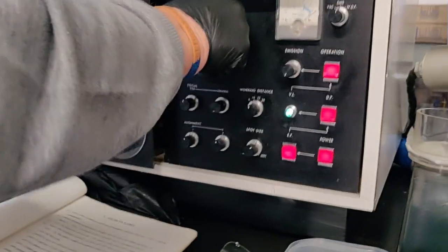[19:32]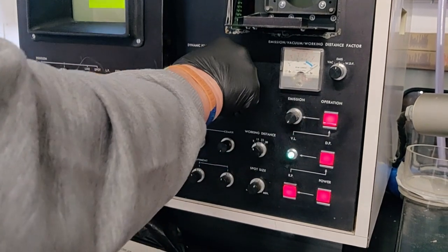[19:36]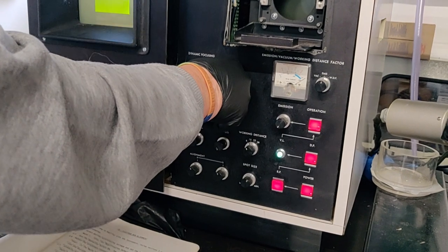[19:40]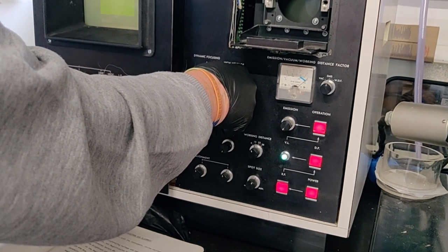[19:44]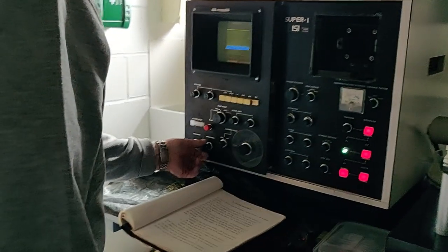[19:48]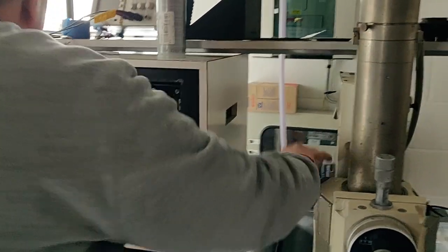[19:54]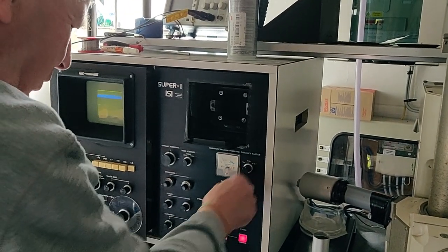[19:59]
Oh, well, it gets brighter, so it's obviously receiving more electrons. Well, yes, that's precisely right. I've got maximum smoke on contrast, so that means it's probably fairly sensitive to light. Yeah, so any electrons that are going to come down there, we're going to see them. So that's the proof of that.
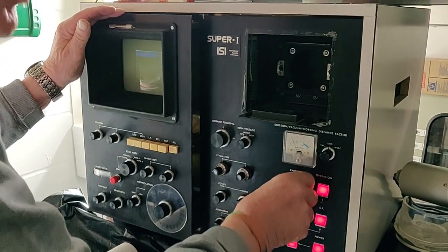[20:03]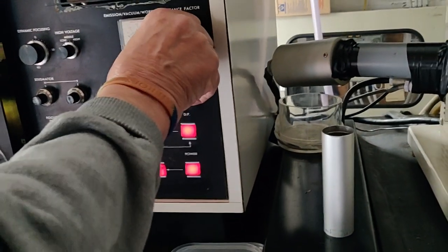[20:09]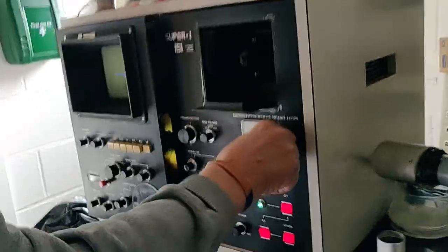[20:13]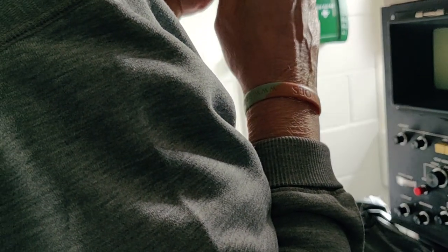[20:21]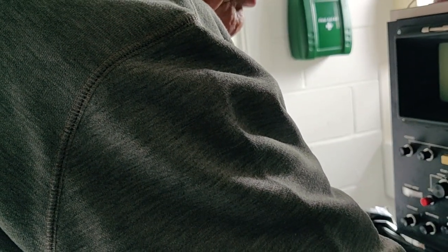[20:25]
No, it's not doing anything, I'm afraid. Not getting any... I don't think that this is aligned, to be honest, though. Well, I think you should get some electrons. Well, we should have got some at some point. That looks to me like a physical breakdown somewhere inside the gun. Like a spark? Yeah, like an arc of some description. Well, maybe the image. Yeah, look at that, actually. You get a white spot, by the way.
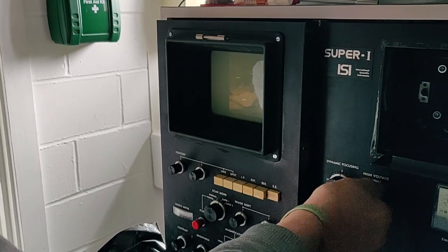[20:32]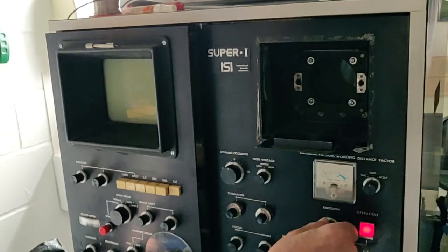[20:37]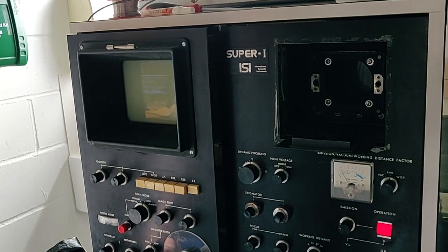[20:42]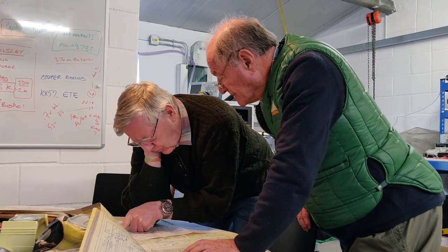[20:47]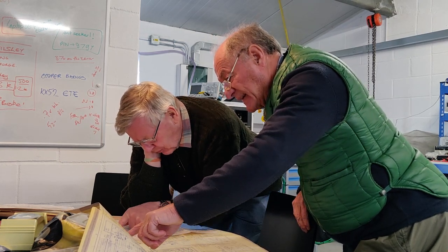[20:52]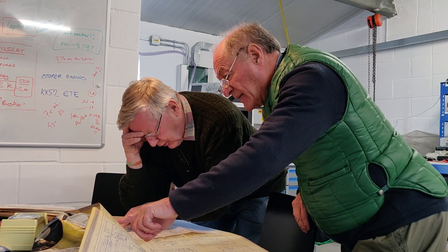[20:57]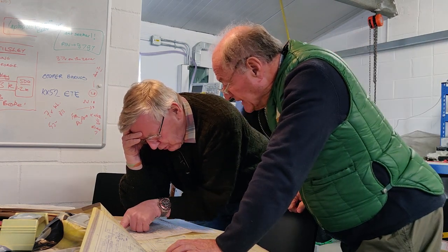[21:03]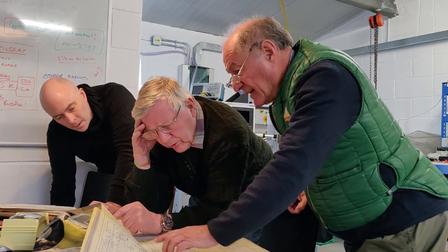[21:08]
The trouble is, I don't know whether there's things going on with relays, you see. Oh, I see. So it might just be cross-coupling or... So this is the crucial thing. Filament drive goes out on 2B and 4D and 3C. So there's a bifilar transformer there with 32 to 16. So it's got a higher current output going out down, which will be AC, a switching square wave, coming out down those two. So does that make sense?
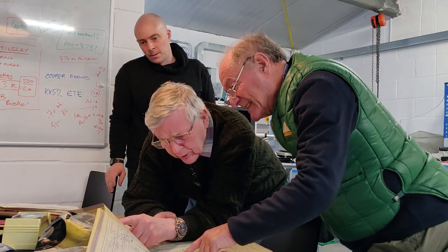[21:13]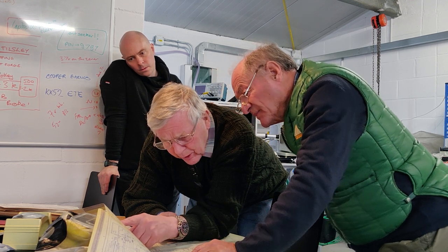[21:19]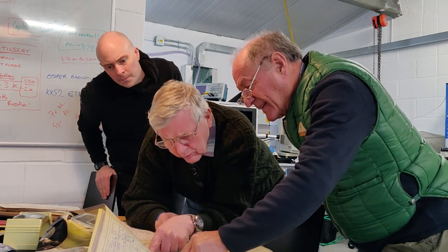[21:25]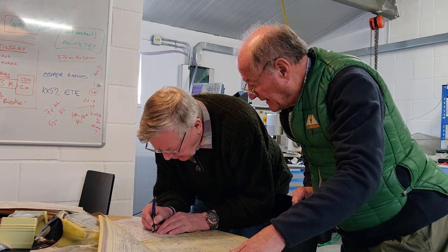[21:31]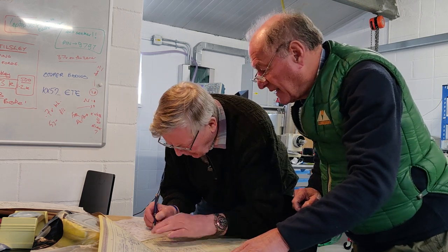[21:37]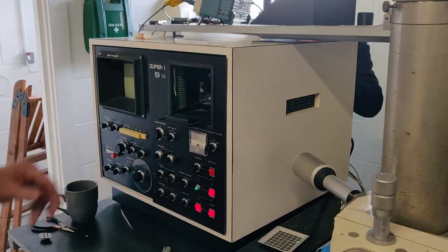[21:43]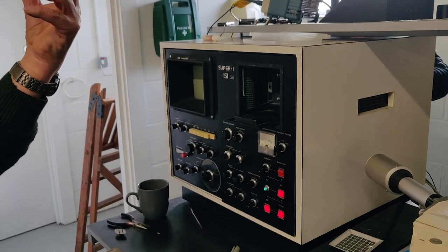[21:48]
2B and 3C there. Those two big power transistors, common emitter, and two connectors, they're PNP NPNs, they are going off to that connector, which goes off down to 3 and 4. This is the output, right, 2, and it goes to the end of that potentiometer, right? The ones we're interested in are those there. That grid. Power out and put the coax in. Yeah. Why are we putting the coax in? Because otherwise we've got a high voltage floating around the end of it, it will arc over. Yeah, okay. So that's our culprit.
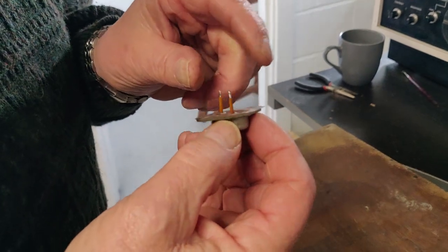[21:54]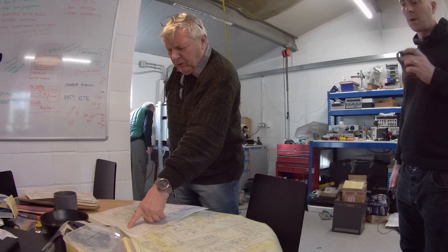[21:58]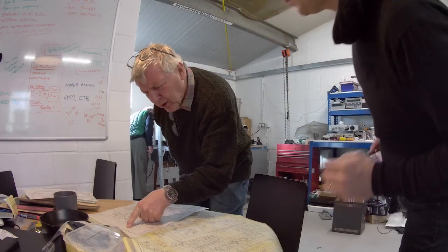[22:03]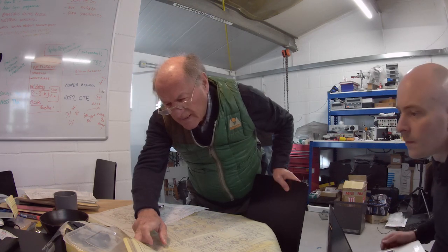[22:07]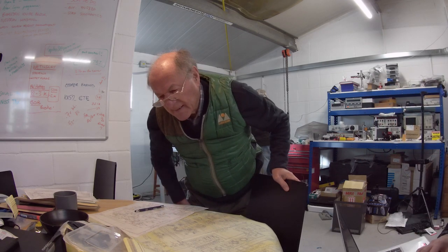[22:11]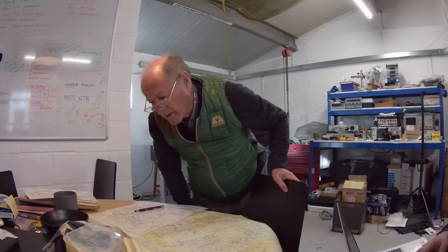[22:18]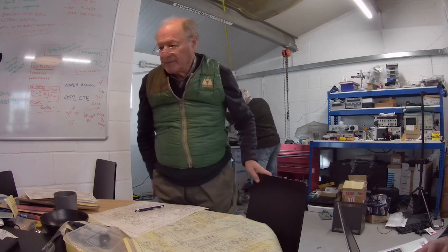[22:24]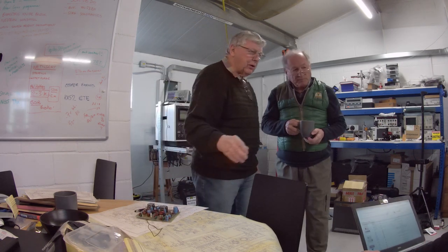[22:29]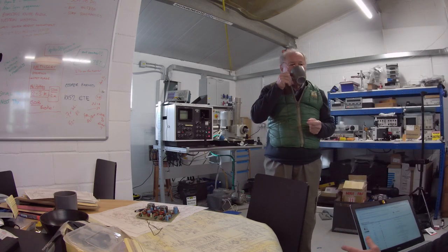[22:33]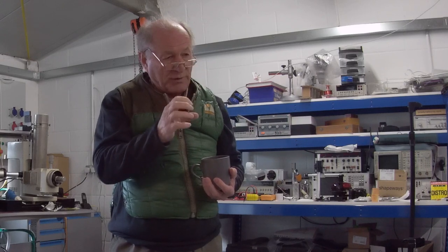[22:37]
Yeah, now we've got to put the other one in. Because what we don't know is what's a D110-0 or -0/0? There's lots of them. D110-0. Okay. Yeah, 36P from RS. Because there's a bunch of them here. 36P? Goodness. Oh, no, hang on. It's a power transistor. No, that's not right. D110/0. So the nearest I can get is D1100. These look like they're quite big. Yeah. They mount on a heat sink, so they're going to carry some.
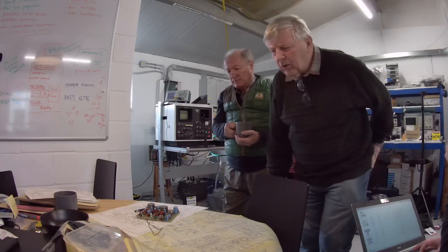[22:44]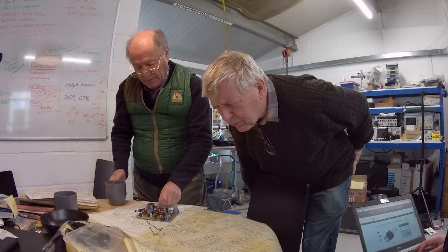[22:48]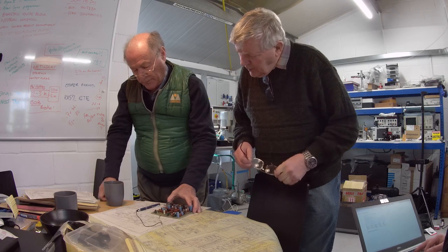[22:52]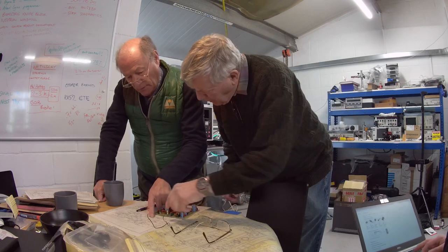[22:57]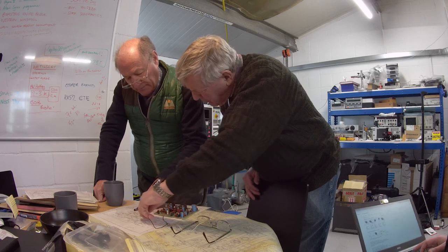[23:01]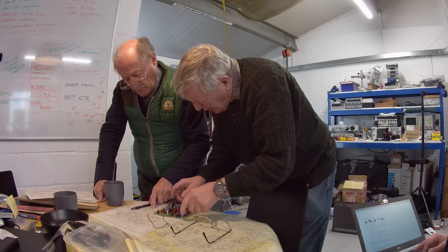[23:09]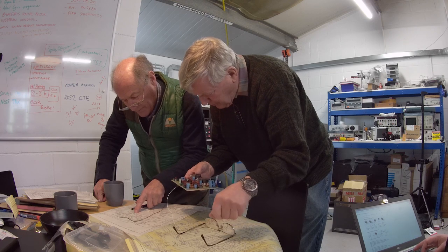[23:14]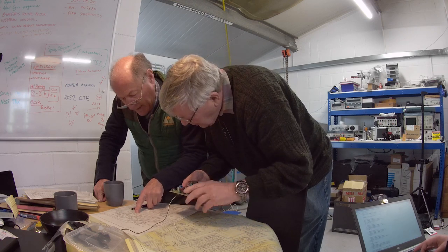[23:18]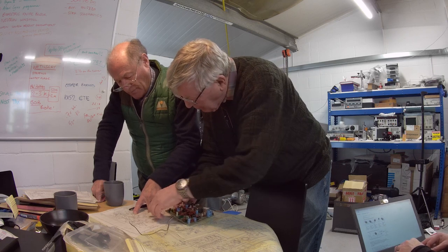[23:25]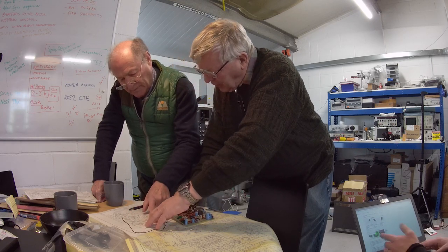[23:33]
I keep coming back to Dick, your memory. Yeah. Which is pretty good. And you're saying that we've already... Yeah, we verified that the voltage there was right. That's okay. We verified that it was getting to that. Right. We changed that, and we changed those two transistors there. That capacitor that blew up, which I think was this one. I think it was C8. Yes, that's it. We don't understand why that blew up. No, we don't. It's a bit bizarre. Yeah, it is. But then we had assumed we might have fixed it. But clearly, even having changed all that, it's still this one. So he's now the last link in the chain.
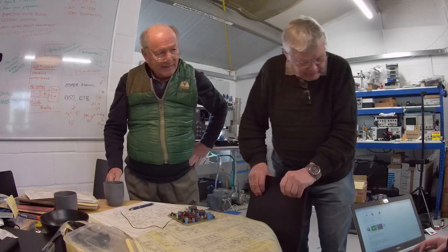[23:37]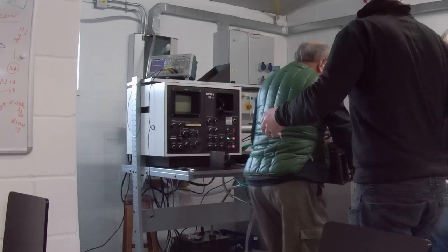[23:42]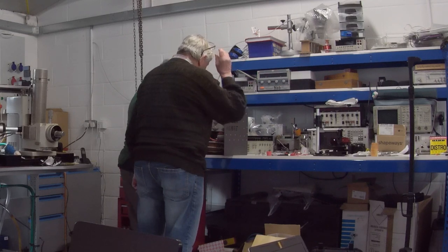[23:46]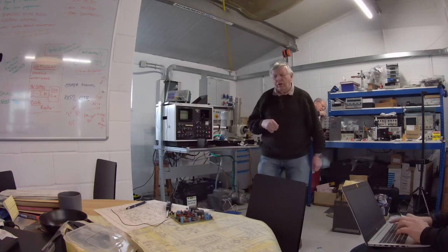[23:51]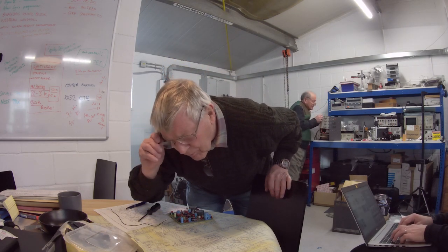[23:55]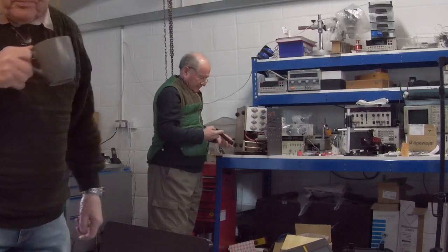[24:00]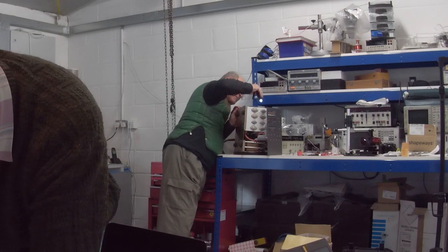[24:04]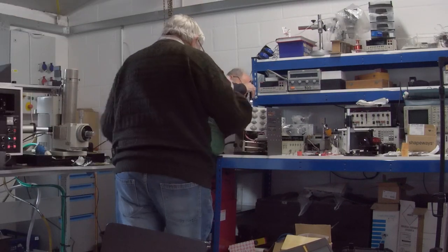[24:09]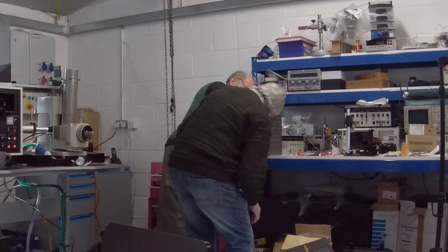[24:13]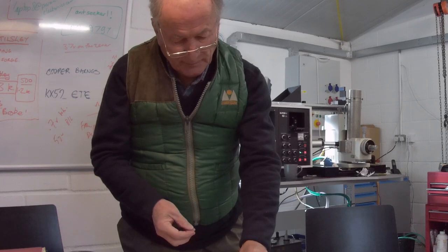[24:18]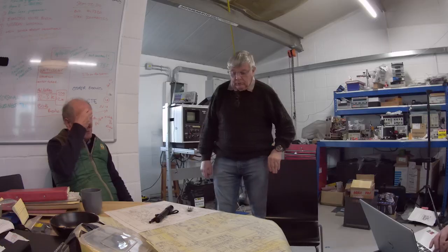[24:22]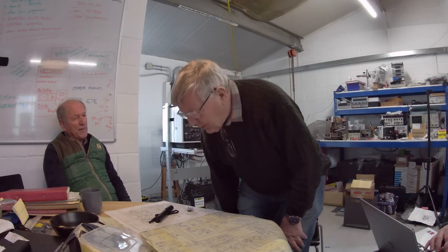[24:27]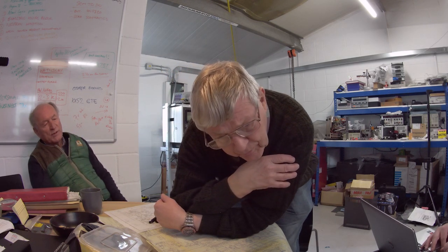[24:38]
It's precisely right, isn't it? Okay. There's nothing left. So just on there if you can. You're right. So which one is it there? That's the next question. If you tell me. Oh, the one I would be most interested in, Bernie, would be TR3. Oh, sorry. TR1, 2 and 3, and it's TR3 of that trio. Yeah. And HFE classification, it's an O, so it's 50 to 150. Well, my gut feeling is it will burst into life, but I don't know that there's anything. It's following the pattern of failure, isn't it? Yeah. Those ones we replaced, and the output, which wasn't giving us anything, was it?
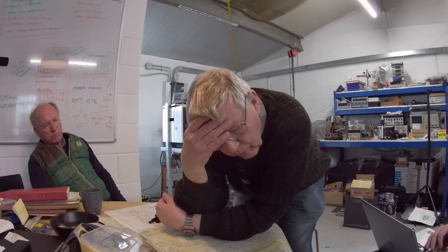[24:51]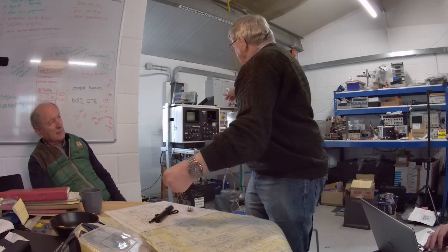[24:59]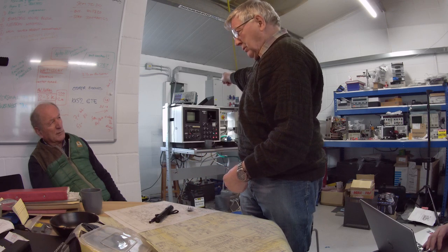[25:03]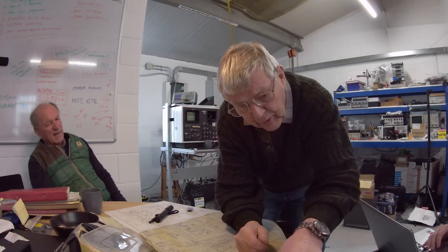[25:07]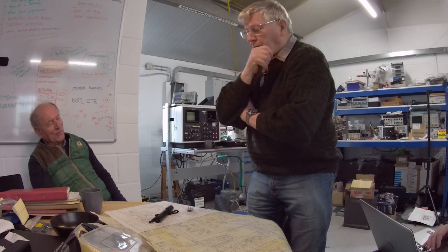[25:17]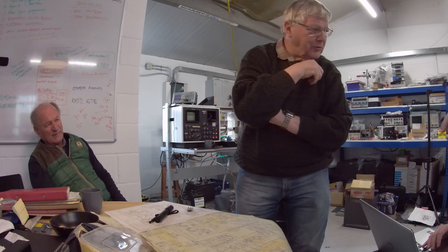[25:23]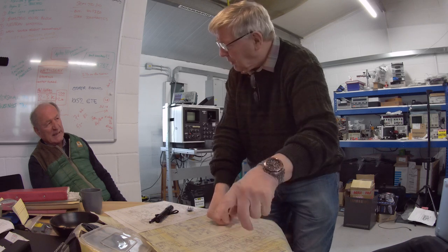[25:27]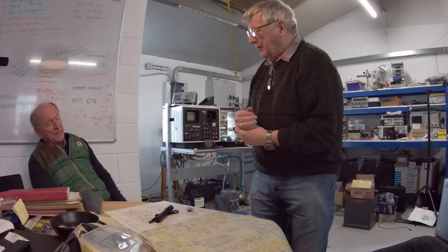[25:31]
Hang on a minute. I've just spotted something. We've got the same transistors in the record scan. Which we're not using, are we? We're not. We're going to cannibalize it. Well, it's an individual unit. Here, look. And there's two of them. Two SD110s. And we know that works. We've seen it light up. That might be a solution for today. I mean, it would be nice to have both, wouldn't it? But that unit is an individual unit, and it doesn't require... It's standalone in the whole thing.
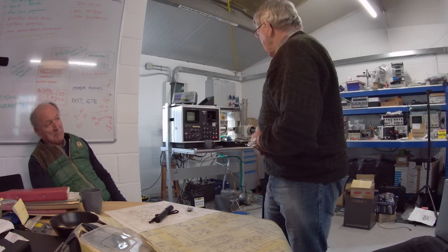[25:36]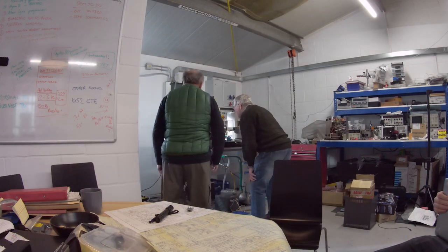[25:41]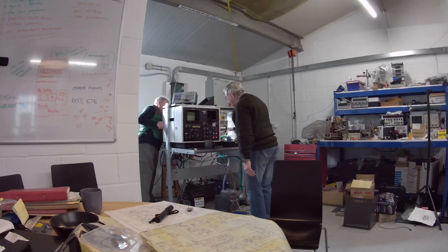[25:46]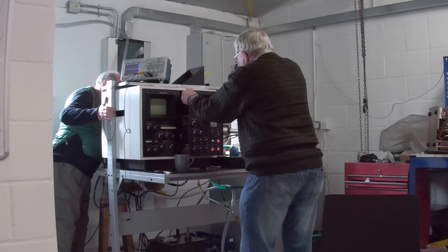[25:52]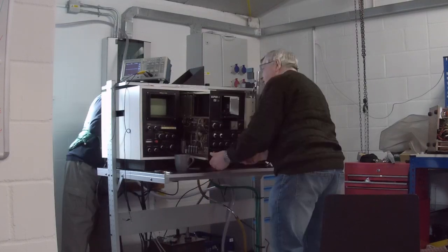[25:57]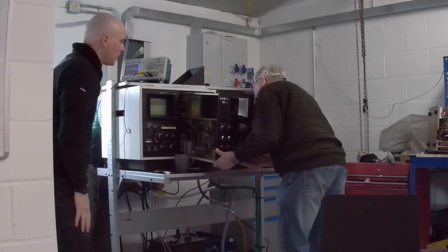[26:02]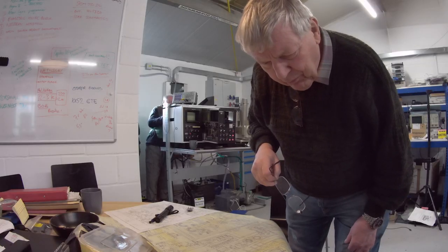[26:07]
So we could try and recover it from that unit on the right. What do you think? Yeah. And how easy? Well, that might be a question. Where is he? What is he? He'll be that tart unit full. I'll tell you when he's stuck. Keep going. Quite a bit more cable here. Can go some more, yeah? Oh, that's okay. Just need to top this up. Yes, that's right, Bernie. There are only two connectors to that.
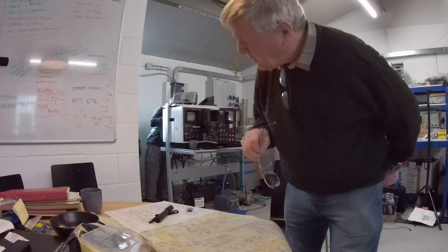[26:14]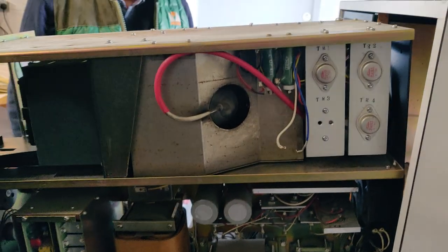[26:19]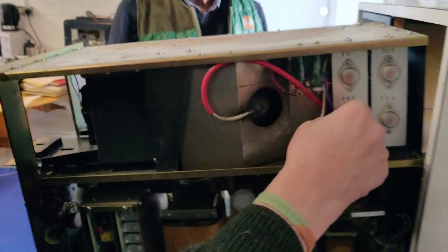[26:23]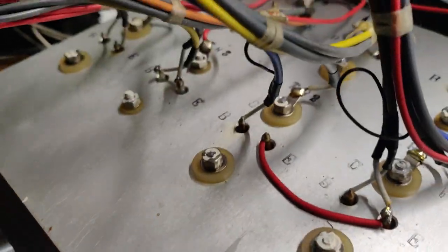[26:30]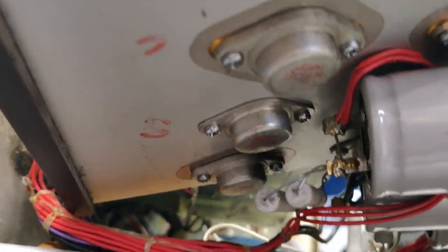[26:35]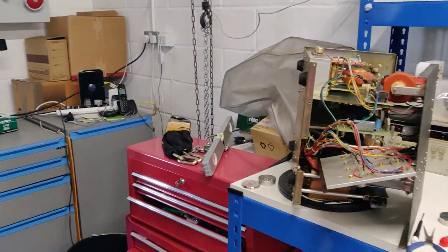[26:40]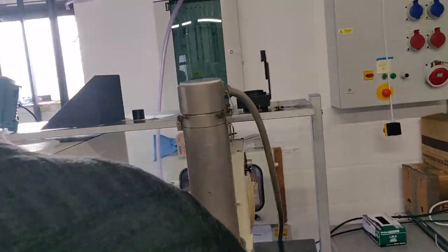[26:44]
One's JPC1 and JPC2. We've scavenged a Toshiba 2SD110. Do you think they're just going to be safe like that? Do you want to cover them in electrical tape? A little bit of tape would be good, I think. Yeah, they'll both sit on that tape. And we've replaced it into the filament power supply, is that correct? Yep. And that's just driving about 5 amps. That'll be driving 5 amps down the filaments. Yep. At the top of the electron gun here.
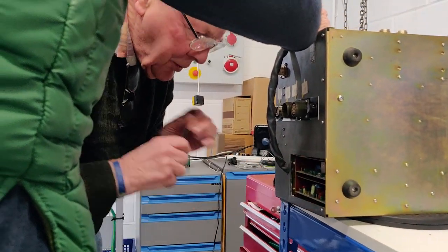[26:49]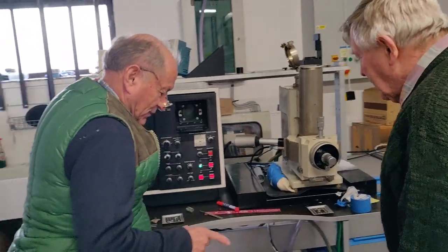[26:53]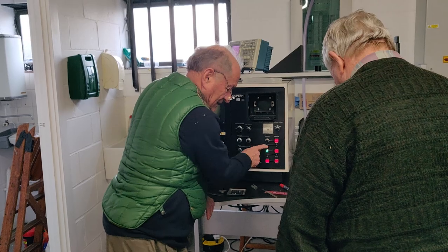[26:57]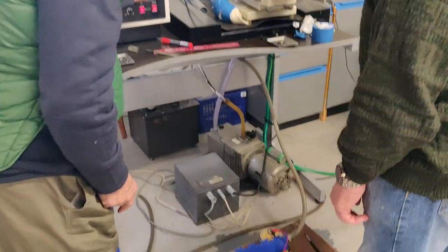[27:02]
Right. Okay. Shall we leave that off? Can we leave that off? Okay. We're set? Yep. Power on? Yep.
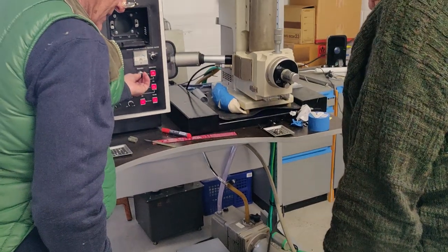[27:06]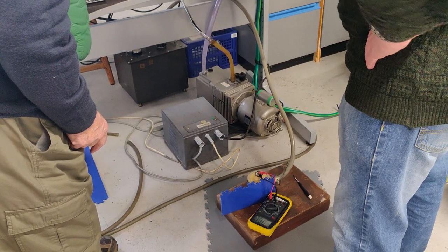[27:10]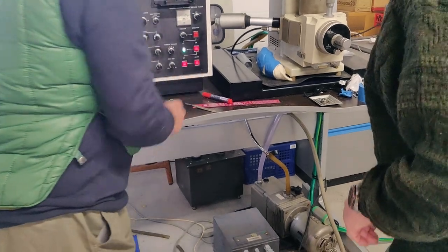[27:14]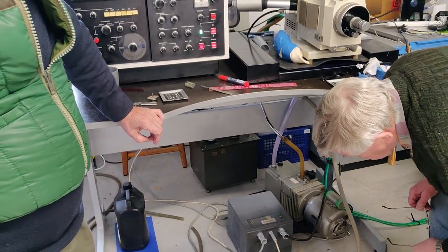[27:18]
Going up? Nothing. Daunting, isn't it? Nothing. It's making a different noise though. That's just a fan in there. No, you get a high pitch noise. Yeah. Did you?
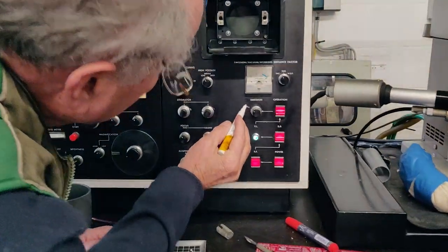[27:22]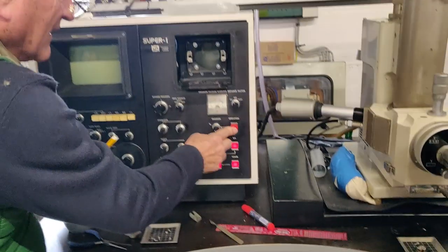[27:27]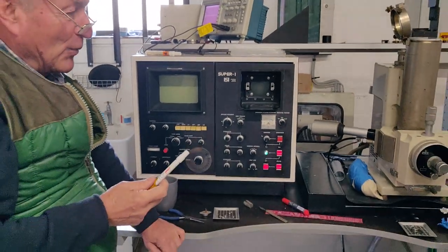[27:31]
That's it. So we're recording where 2.5 amps is. Brilliant. It's distorted. To me, that looks pretty good, though. Look at that image. Yeah, it's early to tell.
I mean, we don't know what mag we're at. That image looks really like something, if you see what I mean. It is a real image of something. And for that to be happening, the electrons are hitting it, they are scintillating. Indeed. And the whole scanning chain is working. Everything's working. The multiplier is working.
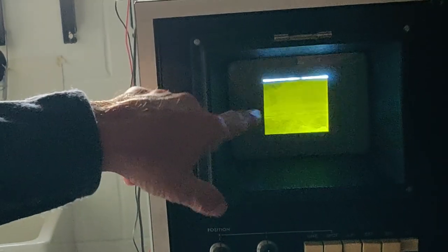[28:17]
I don't know what it is they're looking at. It'll be some sample from my dad, you know, geology or something. It looks like an organic thing, right? I can't tell. You can get metal samples that have features that look like that. Fair enough. Look at that, it's beautiful.
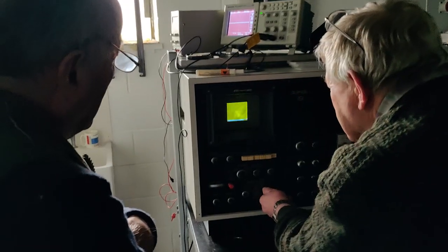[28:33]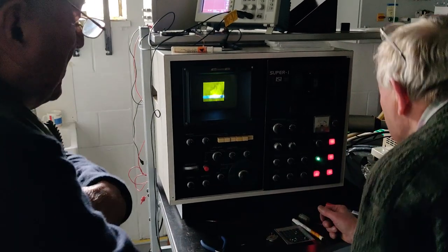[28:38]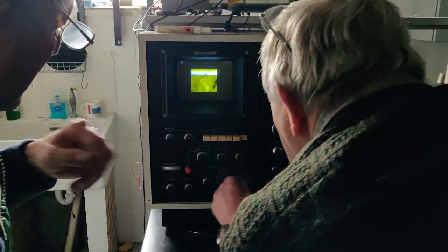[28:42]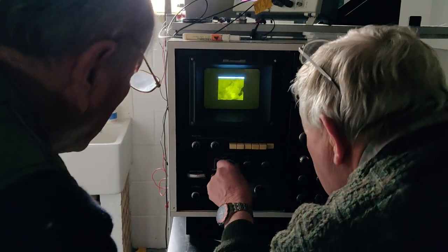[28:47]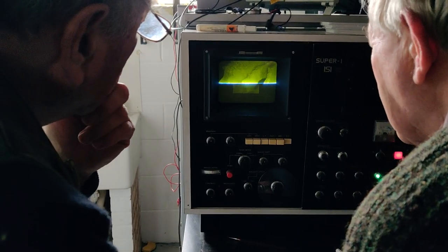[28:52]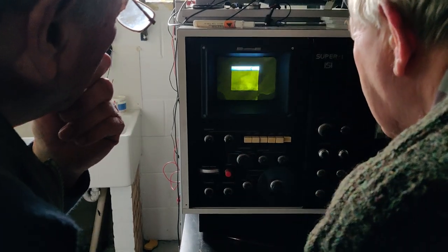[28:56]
Can I get a close-up of the screen? Yeah, sure. Let's focus on it now. At this point, align the gun and see. Well, I don't know, that was my next thing. Is that as fast as it goes? That's normal. That's too slow for us to do. Rapid 2 is the best we've got.
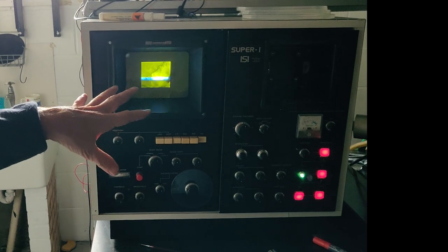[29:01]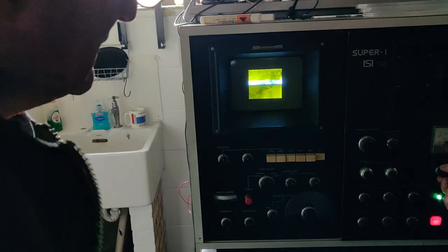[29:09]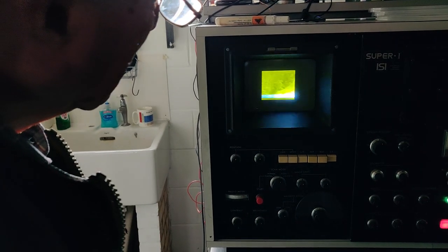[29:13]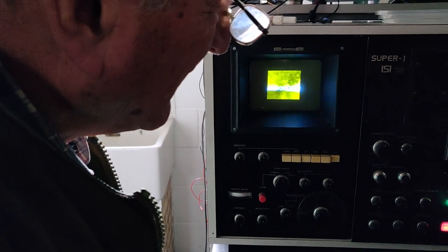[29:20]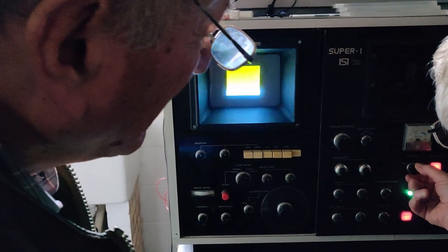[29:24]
I'm going to be honest with you, normal looks lovely. It doesn't look like a bad image. Okay, we can't tell. Well, at the moment we've two unknown things. Is the gun aligned? Is it saturated? That's just a tiny little touch. Well, there was something in the book. It said go up to 100 microamps. I'm only at 50 microamps, so perhaps if we go up a little bit more.
Ah, now. Okay. And now go to normal. Now we know what's happening. Switch to normal on the phosphor. Normal scan. Oh, wow, what's going on now? There's a full sized image setting you're using. Yeah. Oh, wow. So that's low mag.
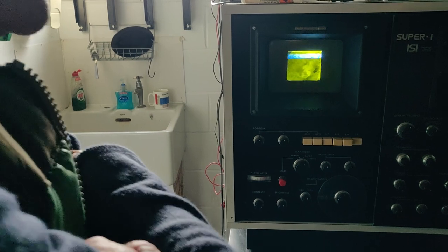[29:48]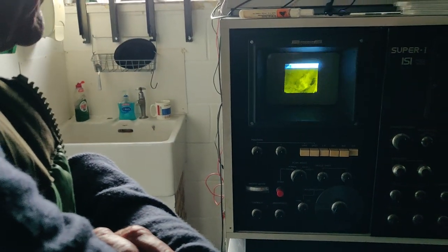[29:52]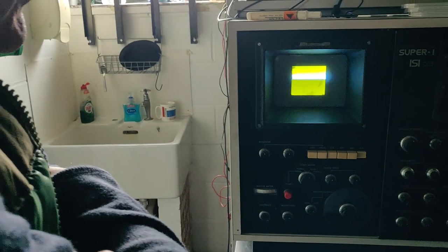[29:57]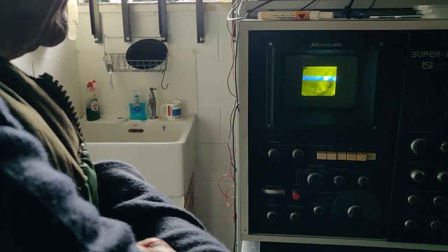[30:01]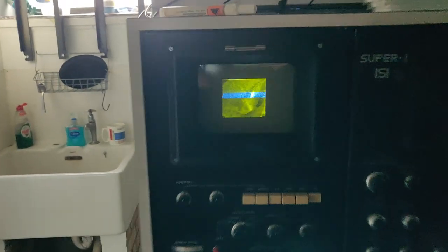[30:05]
What I've done is I'm up to 80 microamps, which is probably about where we need to be. But if I turn it down, you see what we're doing, we're coming through. Now, if I go up a little bit bright, I probably need to tweak these around a little bit. Yeah, it's offset slightly. That's the right way. That's better. Turning down a bit more, and a little bit more.
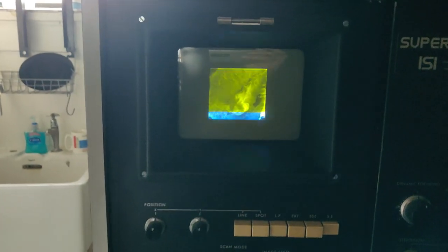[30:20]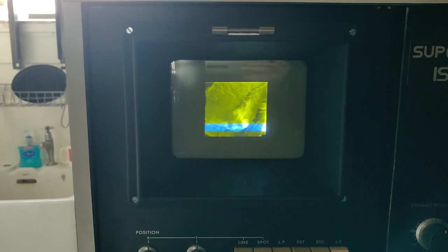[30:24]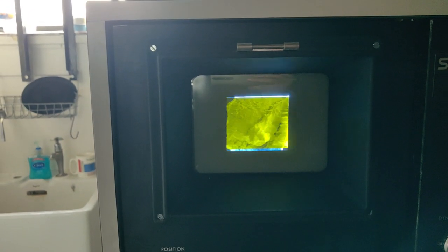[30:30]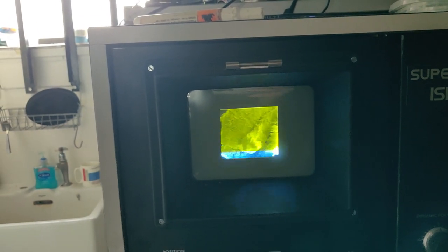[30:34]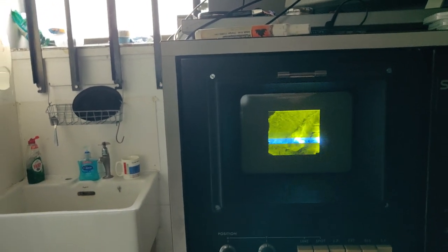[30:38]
See, as the filament saturates, yes. If it's under saturation, the beam will be slightly off the axis and not coming from the point of the filament. And what Dick is doing is saturating the filament so that no further increase in current produces any further beam. That's saturation. And the phosphor retains the image, whereas nowadays, it's all stored in digital mode.
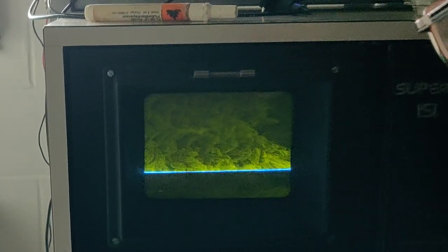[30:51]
But just there you can see the difference. Yeah, I'm so used to seeing these. To set it up, you need. Whoa, what are you doing? There's another fast mode there. There's a dirty contact on the switch sometimes. Okay. So how are you moving around there? You're using mechanical movement on the stage. Oh, okay. Mechanical stage.
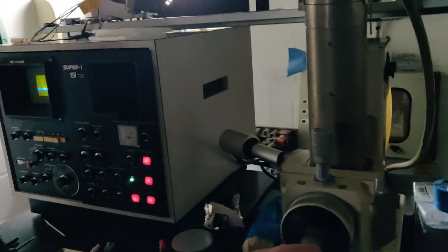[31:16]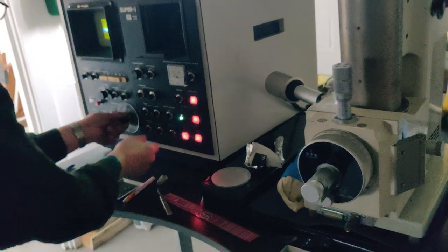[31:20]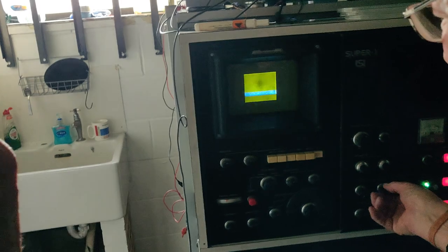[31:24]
Could be biological of some sort. I'm sure it is. I'm sure it's a sample my dad had. Yeah, and then that, probably. That fine focus. Wow. There's a little bit of vibration coming through. Yes, because it's probably, yeah, things could be touching there. Difficult to know.
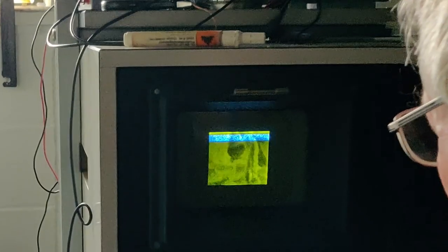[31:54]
The astigmatism is a little bit strange. Oh, it's an alignment. It's not astigmatism. What am I fiddling around with? Oh, silly, okay. All right. That makes sense. Yep. Right. Okay. Now let's.
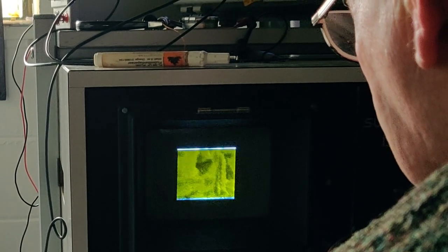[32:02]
You know what manual is? No. Sorry. And is there any numbers? Well, of course, I think there are. There'd be a working distance factor there. Can we have the lights? Anyway, I think the question in my own mind is whether the gun is properly set up. But yes, it is. And it would be nicer.
Could one of you stand there? Why? Because there's a reflection on the screen. Yeah. Oh, look at that. It's beautiful, isn't it?